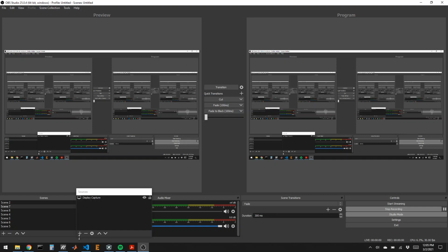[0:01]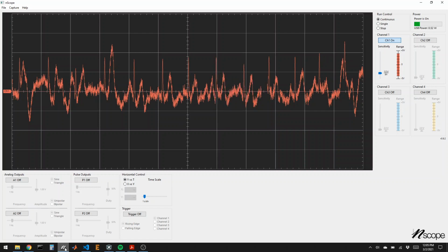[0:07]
In the last video, we built an ECG amplifier. So I have electrodes on my wrists and elbow going to an instrumentation op amp, and then a bandpass filter and an amplifier. I've skipped the intermediate steps, and on channel one of my nScope, I'm just showing the filtered and amplified output of the data. So we can identify the classic PQRST curve to my heartbeat.
And notice that there's still a good amount of 60 Hertz noise on this. I haven't filtered a lot here. It's not optimized. And it's also a good motion sensor. If I move around, you can see the signal also is going to go up and down. So I'm trying not to move a whole lot as I'm doing this talk.
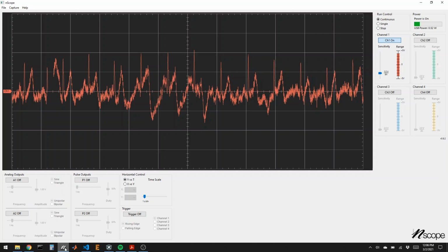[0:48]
What we did after we made the signal was, using nScope, we captured this data using a CSV file, and then we were able to plot it and do FFTs and any kind of math we wanted to do in Python. But an interesting thing with nScope is that we don't have to always use this CSV method. The data is coming in over USB and being stored on our computer in a buffer, and then the nScope app is pulling that data and plotting it for us.
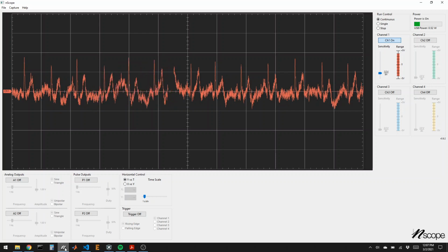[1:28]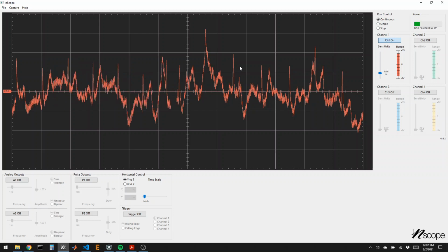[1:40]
So we don't have to use the nScope app. We can use another programming interface to grab the data from the buffer directly from Python. So let's see how that works. This is called using an API, or application programming interface. And the Python library for this is on Canvas. So grab that zip file, unzip that zip file, and put it into your working directory in Python.
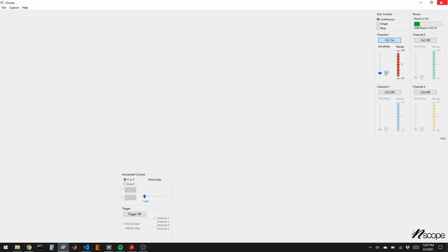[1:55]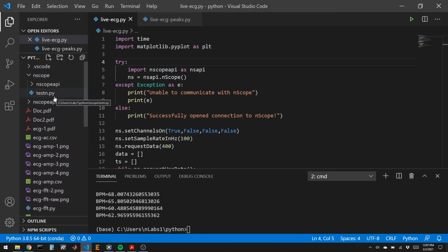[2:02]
Note that the nScope can only talk to one program at a time. So I have to close the nScope app when I try to talk to the nScope device using Python. So in my working directory is this folder called nScope API. And it has all of the files that can read the nScope data from the USB cable and bring them directly into Python. Here's my example for grabbing this data live.
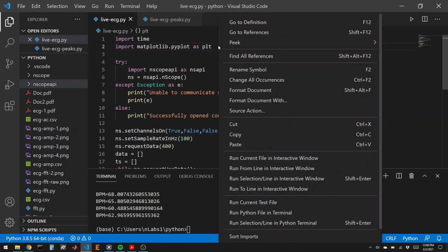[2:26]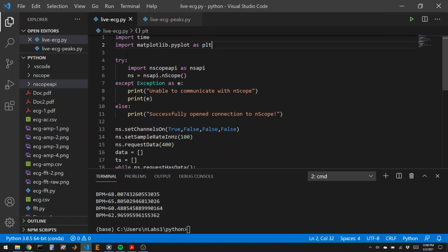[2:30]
So we're going to import a time library so we can know what time it is. We're going to grab our matplotlib library so we can plot things. And here's how we open up the nScope device. So we import the nScope API, and then we make a variable ns that represents the nScope. Now, there's a lot of ways that this can fail. It's not plugged in, or the other program's open, or something like that. So this is in a try except block here.
So it says, try to open the nScope. If you're unable to, print, I'm unable to talk to the nScope. If you did open the nScope, print this, successfully opened nScope. Sometimes this takes up to 2 or 3 seconds. So when you run your code, wait until you see this successfully opened nScope. That's when the rest of your code starts to run.
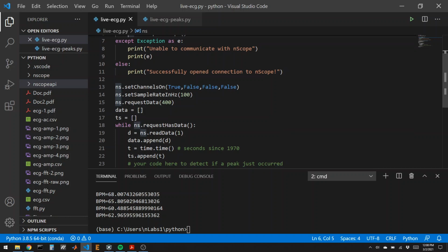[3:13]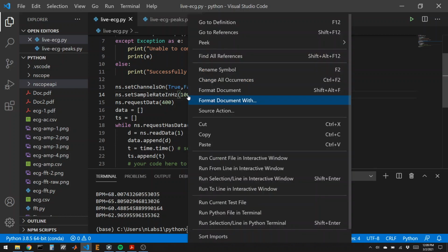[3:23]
So once this nScope object has been created, we can talk to the nScope. So we can set which channels we're going to read. In this case, I'm reading channel 1, but not 2, 3, or 4. I set the sample rate. So how often is the nScope collecting data? Here I'm collecting data 100 times a second. And then I can request a number of data points. I'll request 400 data points. That means that we'll have 4 seconds of data collected.
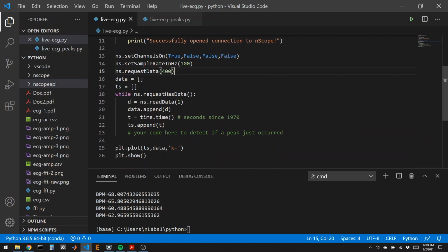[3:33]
I'm going to make some blank lists to store the data. And then once I've made this request for data, the nScope starts sampling our signal and sending the data to the computer. So I can sit in this while loop that says, while I've requested data, because this will take 4 seconds to collect all that data, the data is going to come in, you know, 1 or 2 samples at a time. So every time there's new data that comes in, probably at 100 hertz, because I asked for the data to be collected at 100 hertz, I will read it out of the readData function.
And the number in here is which channel I'm reading from. So I'm going to read from channel 1 and put that number into a variable called D. And then I'm going to put D into my data list.
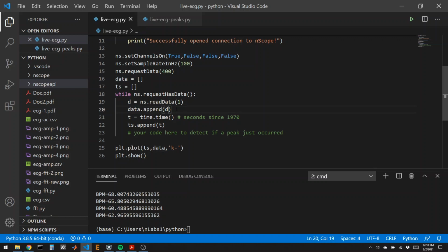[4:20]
But the nScope does not send back what time that sample was made. We know that they're coming in at 100 hertz. So if I want, I could make my own time array and know that the samples have been collected at 100 hertz. Or I can grab the time that this data was actually collected. So this will be the time the computer thinks it is when I collected this piece of data.
And plotting this, you'd actually see that there's some irregularities because the computer's not running super linearly in time. But this is good enough for this kind of sampling. Note that when you use the time.time function to save what time it is, this is the number of seconds that have passed since 1970. That's just how this function works. So this number is very, very big. And it's a floating point number, so it's a decimal number.
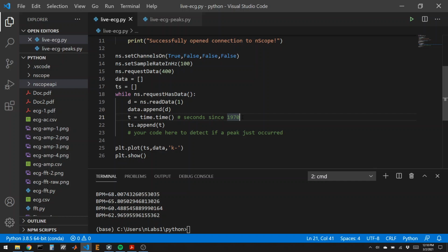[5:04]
It's sub-second resolution. So we're recording the data point that we just got and the time it is into our data and time arrays. And then I'll just plot it. So let me run this code.
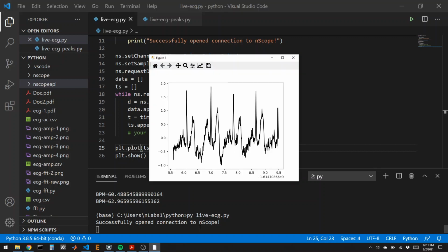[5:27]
So I'm waiting for the successfully opened nScope message to appear. There it is. Now the 4 seconds of data collection has started, so I should probably not move very much. And then once it's done, we see our plot. Notice the time scale. Many seconds have passed since 1970. And we see the voltage that we got back from my amplifier. So we see the classic PQRST.
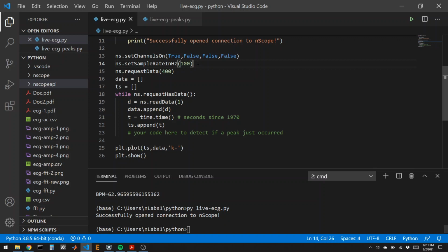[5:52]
So this is another way to collect data from nScope where you don't use the CSV method. And the nice thing about it is that you can actually set the sample rate and how many data points you want. So you can be very specific, like, I want to collect 10 data points a second, and I could do that all day. I could set like 10,000 data points. And I could just leave a temperature sensor hooked up to the nScope, hooked up to my computer, and I could record the temperature in my room throughout the day.
Or I could set the sample rate to be 100,000 hertz. And then a small number of data points, and I could see something with very, very small time resolution. Note that this is an inexpensive device, right? So the sample rate here, you can't go infinitely fast. The fastest we really want to go is maybe 100,000 hertz. That's the analog input bandwidth of the nScope.
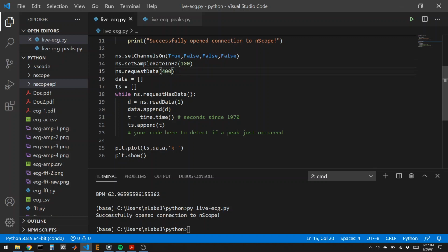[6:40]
And the data that the nScope can store internally in RAM is very limited, something around 2,000 data points. So if you are sampling slowly like this at 100 hertz, you could probably sample as many data points as you want. The nScope is able to send the data out through the USB cable faster than the data is being collected. But once you start trying to get more than 2,000 data points at a fast sample rate, there's a bottleneck in the USB. And you start to overwrite data before you can print it back to the computer. So something at faster than 2,000 hertz and more than 2,000 data points is when things start to fail. So you can sample as fast as you want as long as you take fewer than 2,000 data points. Keep that in mind.
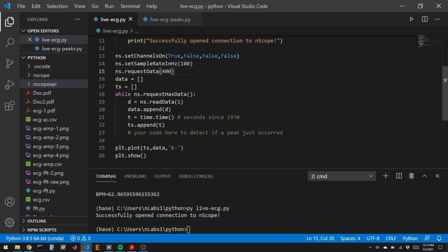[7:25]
So for this lab, what I'd like you to experiment with is the fact that we don't have to wait for all of this data to be collected before plotting it. We can actually, as the data is coming in, write some code that detects a peak, like you did with the CSV file. So edit your CSV code and add that if statement here so that as the data is being collected, you're doing that live analysis.
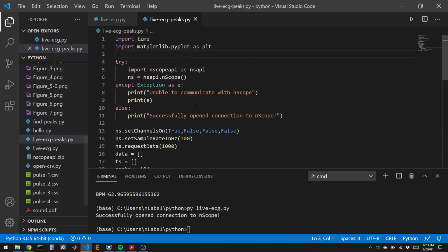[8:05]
And when you detect there's a peak, you could print, I just found a peak. Or even better, you can print the amount of time that has passed from the previous peak, and you can print your beats per minute live with every heartbeat. So I've done that here. I won't show you my if statement, but I can show you some of the code.
And let me run it first. So I'm going to take, at 100 hertz, 1,000 data points, so 10 seconds worth of data. So I should get maybe 10 heartbeats worth of prints. We'll run this code and try to stay still because we don't want too much drift.
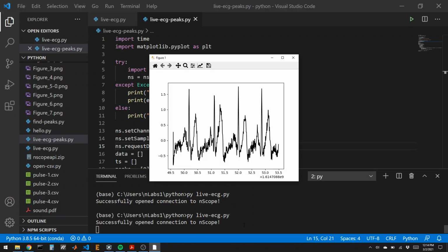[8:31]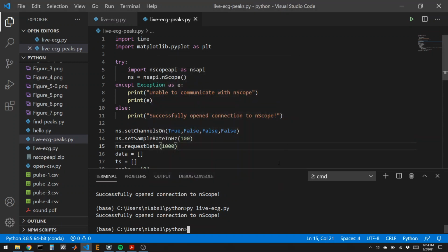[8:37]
Okay, I ran the wrong piece of code. That was the previous piece of code. What is this one called? Oh, live ECG peaks. Okay, so we'll see our message.
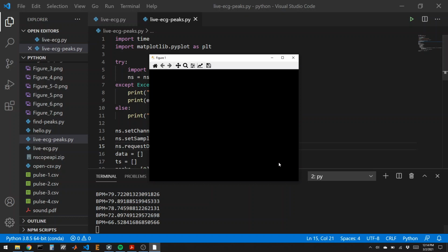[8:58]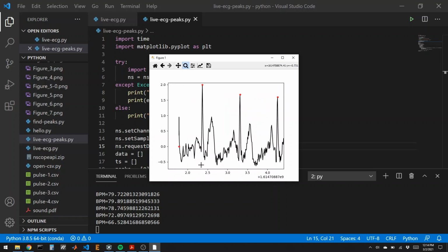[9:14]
nScope's collected. We're starting to collect the data. With every heartbeat, it prints how much time has passed and then turns it into a beats per minute. And when I'm done, I print all of the data that I've collected, and I show where I thought the peaks occurred. Notice, similar to my previous example using the CSV file, I seeded my initialization with a time at 0, 0. So the first heartbeat time period is not correct, but each one after that is fine.
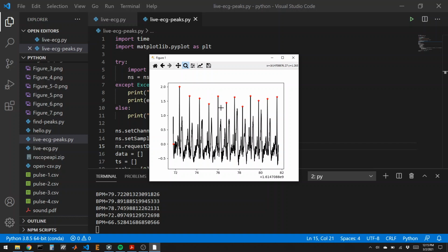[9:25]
And if you wanted to write more and more code here, you could figure out how to avoid that kind of thing. Also notice that I was very still, so my signal did not drift. That made it very easy to find these peaks. If you find yourself with a signal that has some low frequency drift, increase your high pass filter so that there's less drift. Or add another high pass filter after your amplifier.
You can keep stacking more and more. And if you can't seem to find these peaks very well, you can over low pass everything, so you basically get a big sine wave out rather than the PQRST curve, because we're still just looking for one pulse per cycle. So you don't have to find this big peak. You could find the peak of the T if you over low pass filter here. A couple more hints.
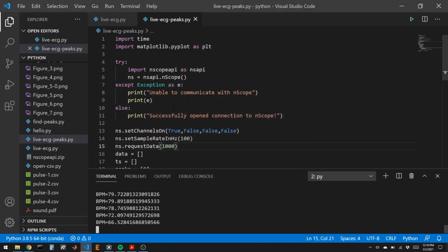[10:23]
time.time starts at how many seconds have passed since 1970. So when I seed my initial peak voltage and peak time, I seeded it with 0 volts at time.time. I didn't seed it with time of zero, because time of zero would be way, way, way left on this graph. What else did I do here that's interesting?
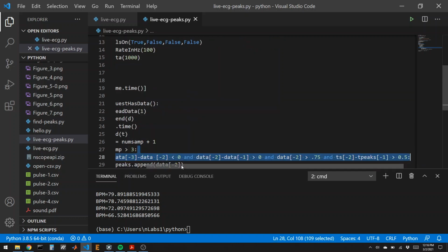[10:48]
Okay, so here's my blank data array and time array. Like before, I've made an array of peaks that I seeded with zero, and a time peak array that is seeded with the initial time. I'm carefully trying to hide my code so you can't see. Oh, there it is. Okay, but you're going to have to figure that out.
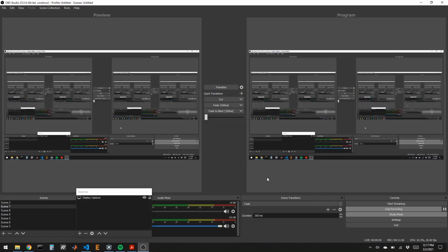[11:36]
So every time I read a data point, the other thing I do is I keep track of how many data points I have, because I can use the -1, -2, -3 indices of my data to figure out what the slopes are and things like that. So I need to make sure I've collected at least 3 data points before I can do some of this math. So I initially have 0 data points. Every time I collect a data point, I add 1 to that variable. And then if I have more than 3 data points, I can then do my next if statement, which contains: is the slope before a data point positive, is the slope after it negative, is the voltage itself over some voltage, and is the amount of time that's passed over a certain amount of time, whatever you did in your CSV file.